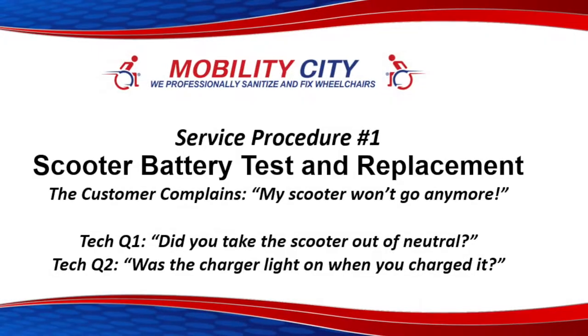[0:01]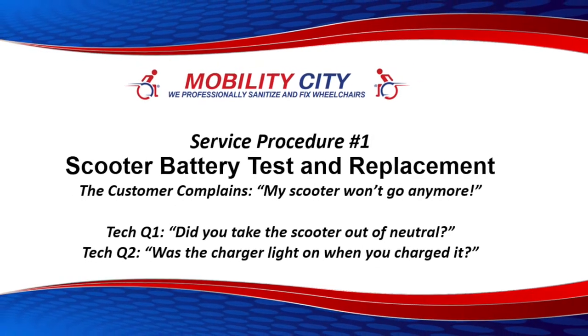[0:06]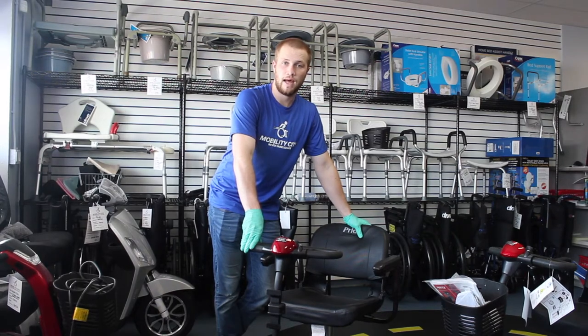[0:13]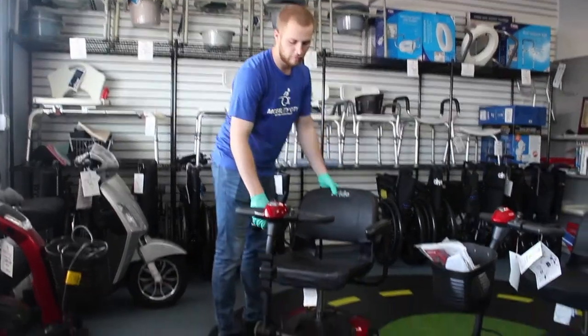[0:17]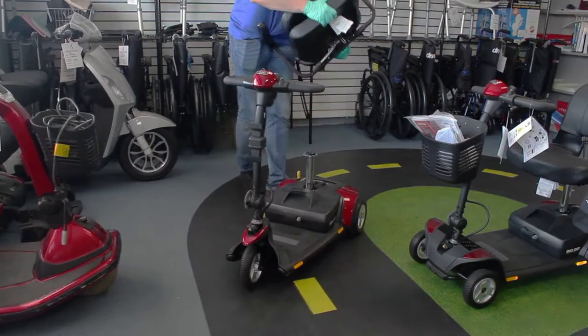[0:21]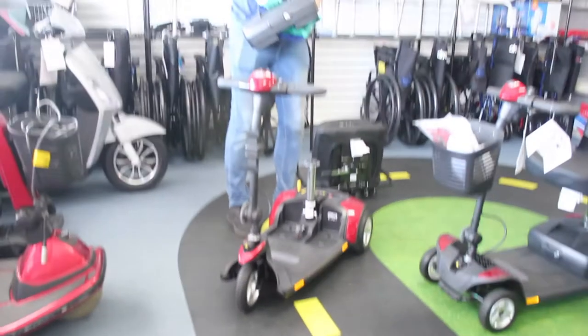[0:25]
This Pride GoGo 3 wheel came into us today and it won't turn over. I have a suspicion that it might be a bad battery. Let me show you guys how you can get down to the battery box. Take your chair off. That just comes right up. Lightly pull up the battery and you're right to the battery box.
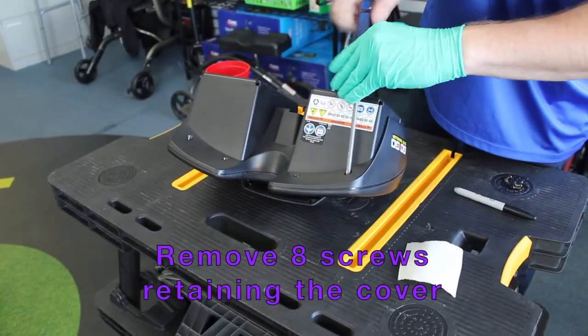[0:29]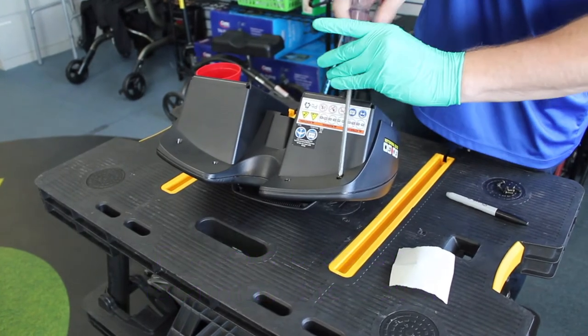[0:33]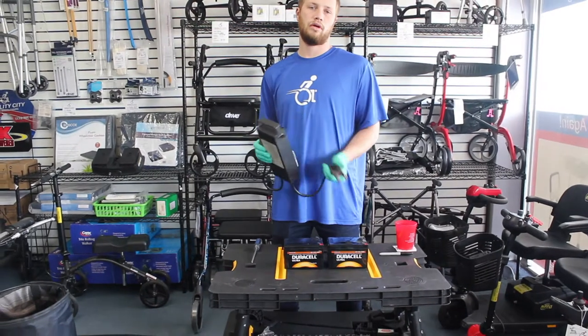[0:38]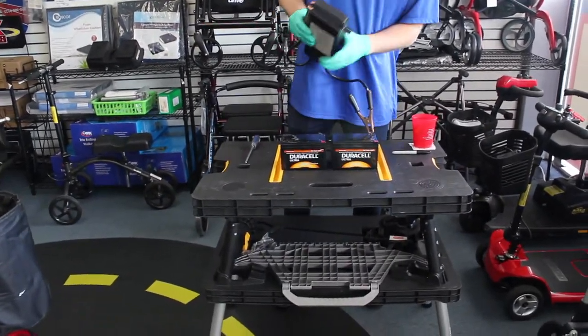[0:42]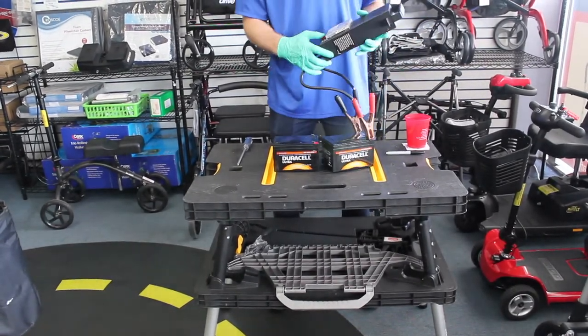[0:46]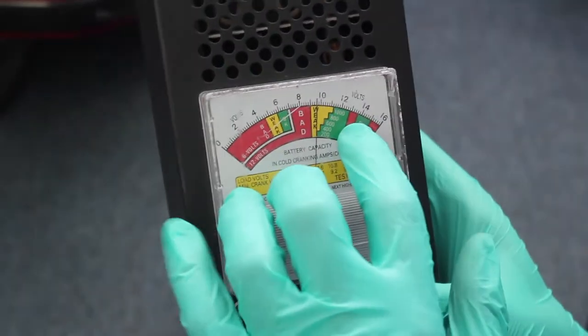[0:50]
We've taken our old batteries out of the battery box, and what we're going to do is take out our load tester. We've put our positive and our positive together, and our negative together on the terminals. Note that I'm just under 10 volts. I should normally be at 12, but I'm testing already at 10.
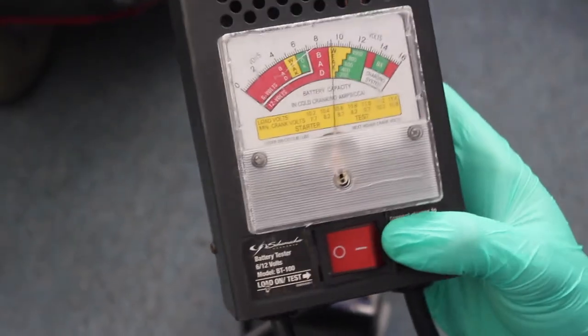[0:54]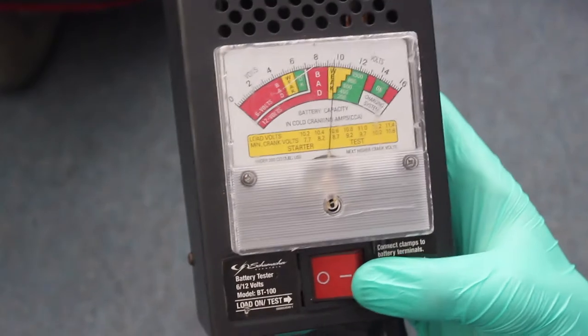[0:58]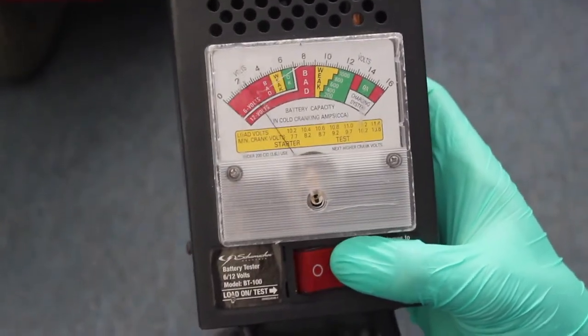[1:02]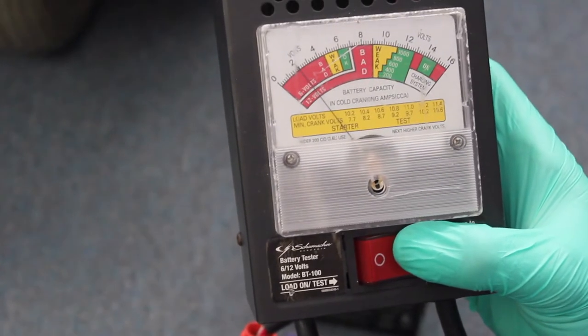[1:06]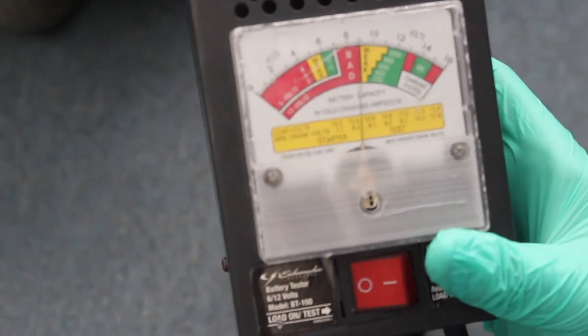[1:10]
Put a load on the battery. We'll hold this button down for 10 seconds, and we'll get a proper test of how many volts the battery has while the scooter is running. As you can see, we tested somewhere right in the 2 range, which is not nearly enough power to function this unit, a case of having bad batteries within a chair.
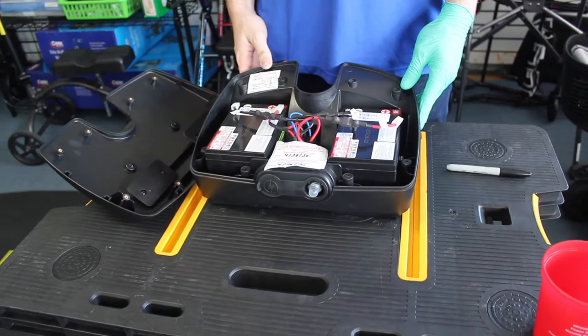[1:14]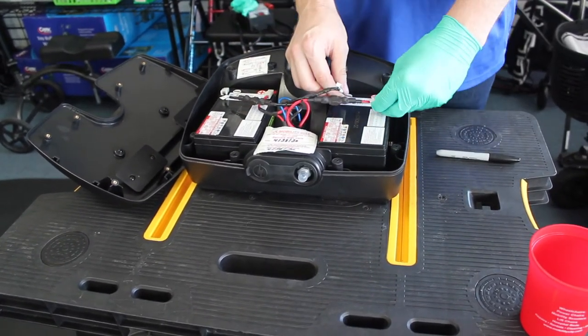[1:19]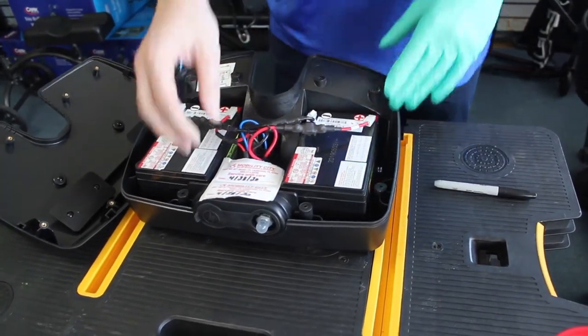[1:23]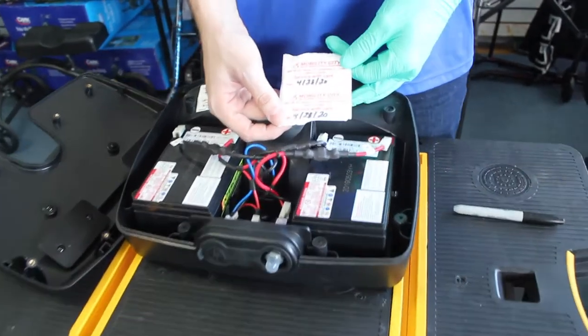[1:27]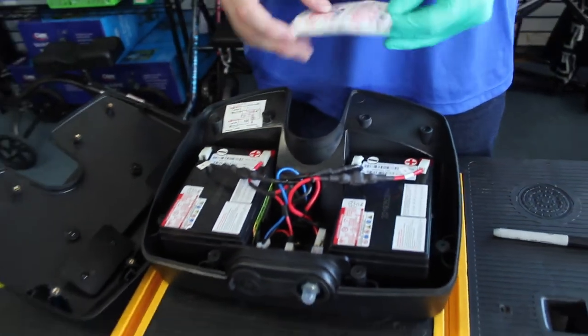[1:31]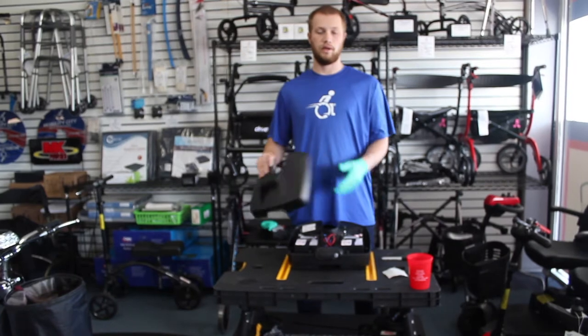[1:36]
We now have the new batteries within the housing, and what we're going to do is just finish up. Put your red terminal to your red, black to black, and the final step is we're going to label these batteries to show when our 6-month warranty is going to begin. We're now ready to close up the housing and then test it on our unit.
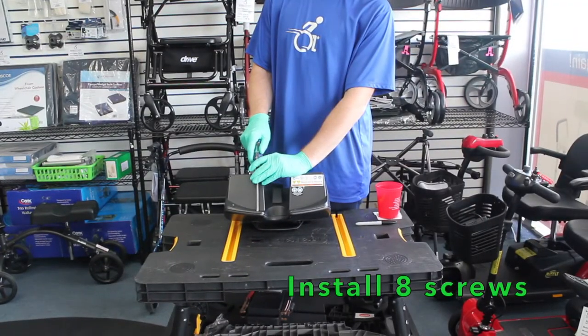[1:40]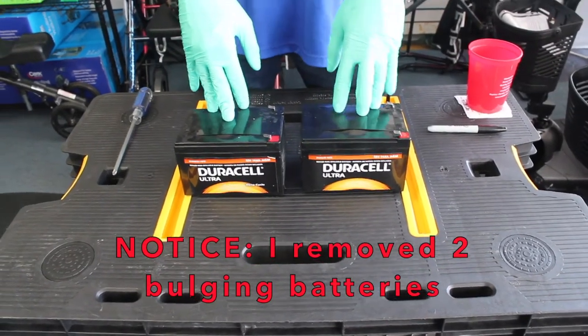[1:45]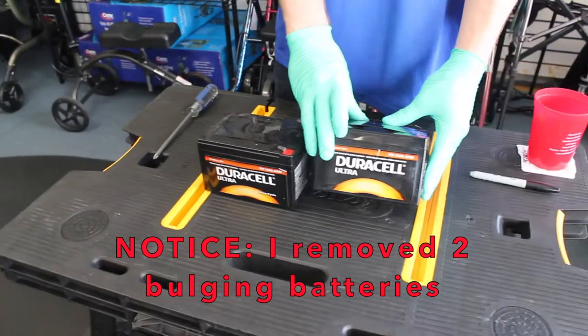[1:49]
Duracell batteries typically do not function well in power scooters or power chairs. As you can see here, this battery has swelled as well as it's kind of almost come undone.
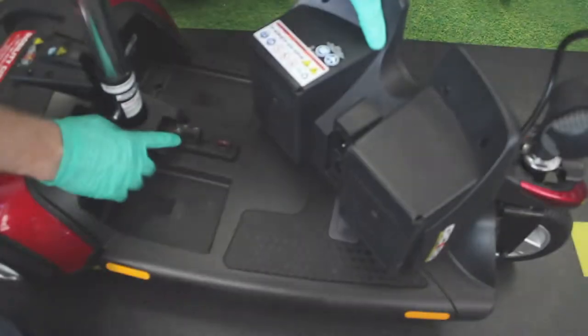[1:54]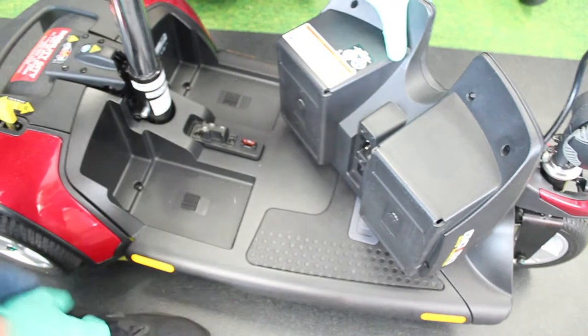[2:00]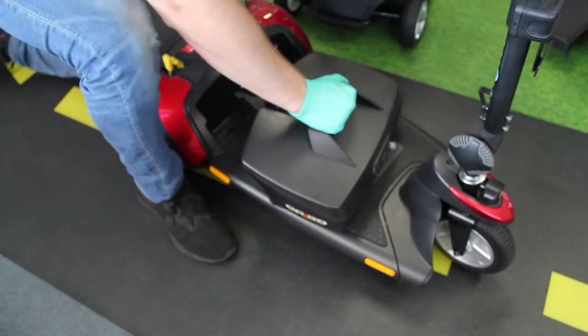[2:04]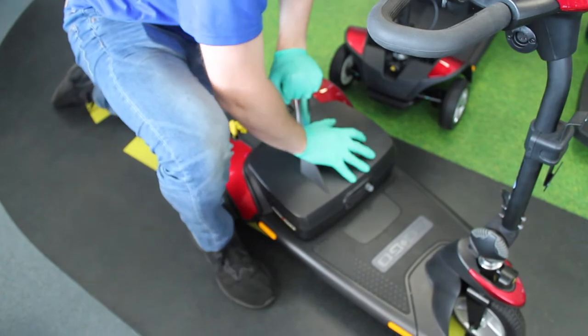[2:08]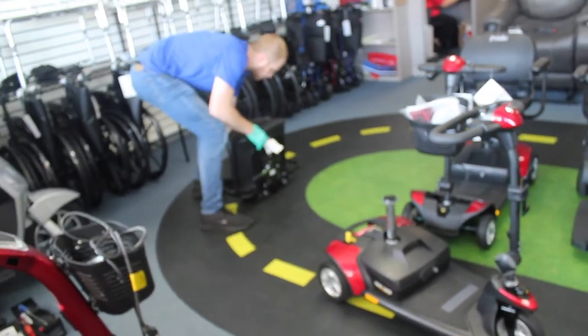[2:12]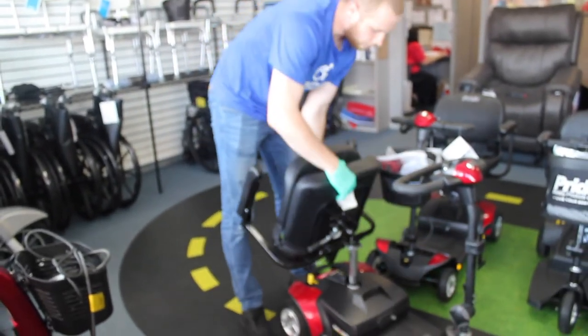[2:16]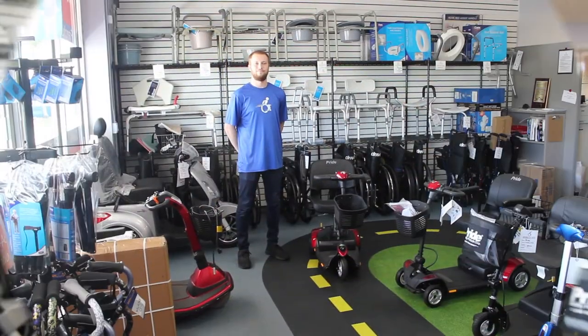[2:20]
You want to make sure that your 3-pin connection that is on the bottom of this battery box sets perfectly into this opening right here. Give yourself some leverage and let it drop right down on there and give it a nice little push. To reset our seat onto the unit, I like to come from the back and just watch it slide right on. The last step, make sure that the unit is fully functional.